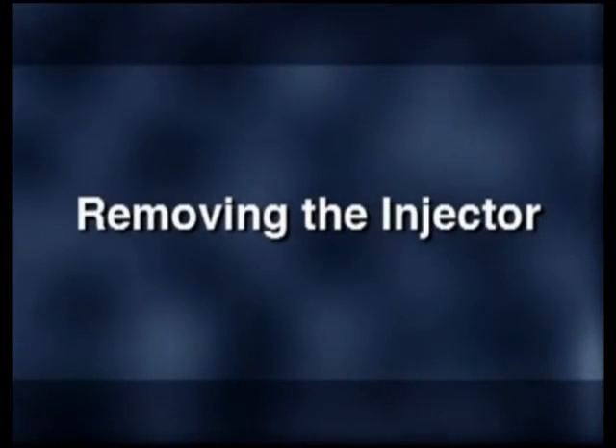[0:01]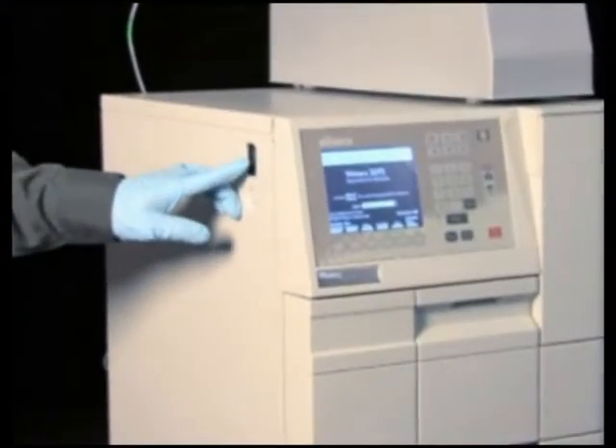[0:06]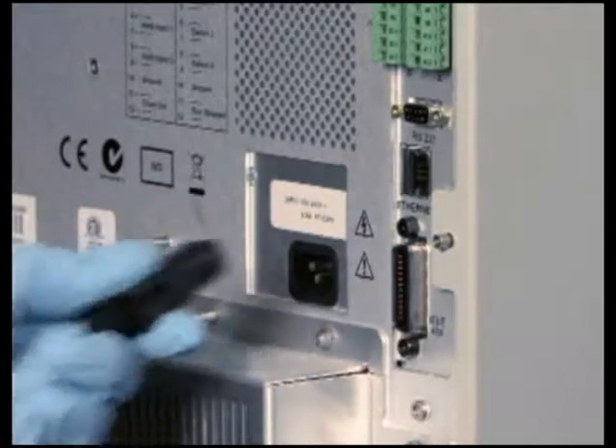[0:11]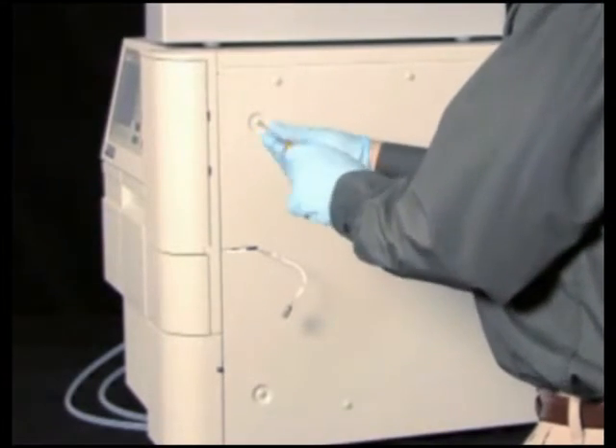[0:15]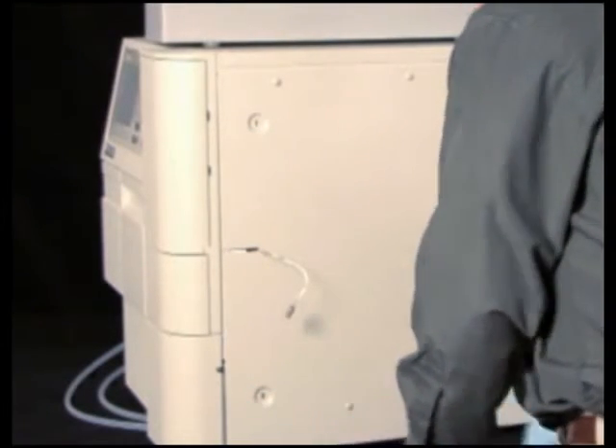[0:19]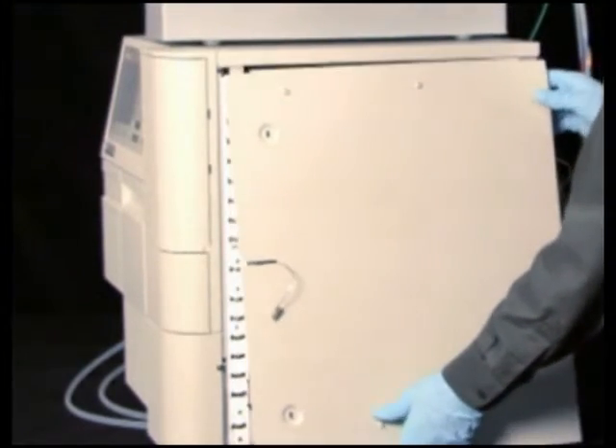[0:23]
Turn the 2695 separations module off and disconnect the power cord. If present, remove the optional column heater or column heater cooler by lifting it from its keyed ports, and then disconnecting its cable from the rear of the separations module. Remove the right side panel.
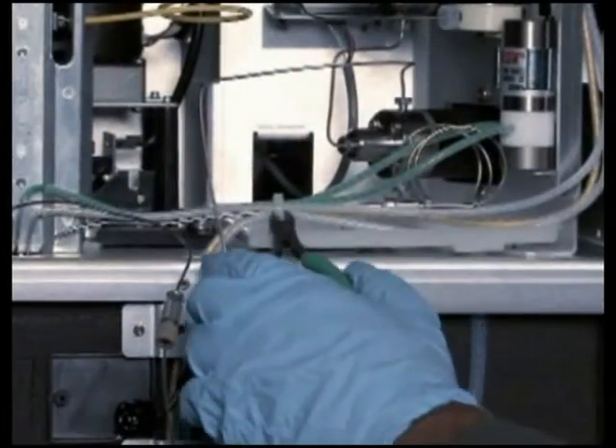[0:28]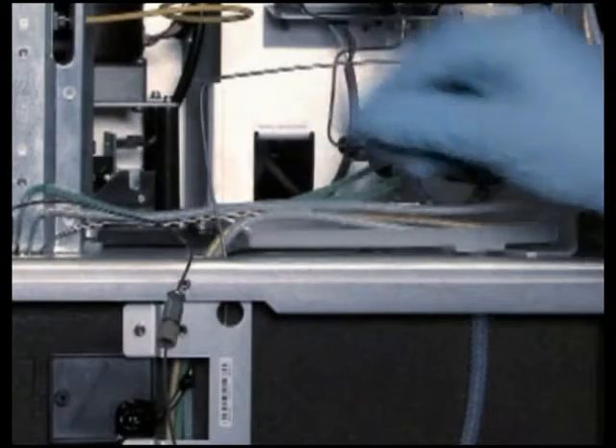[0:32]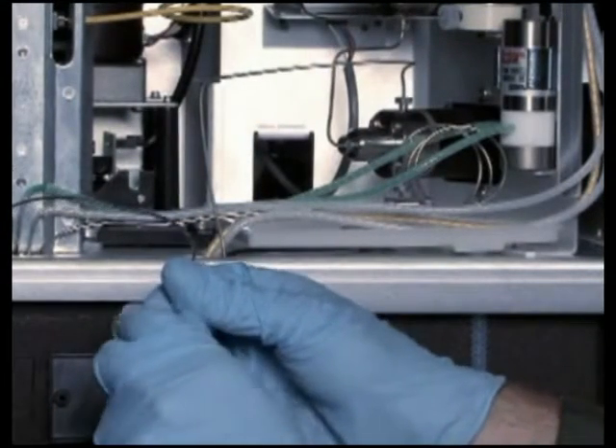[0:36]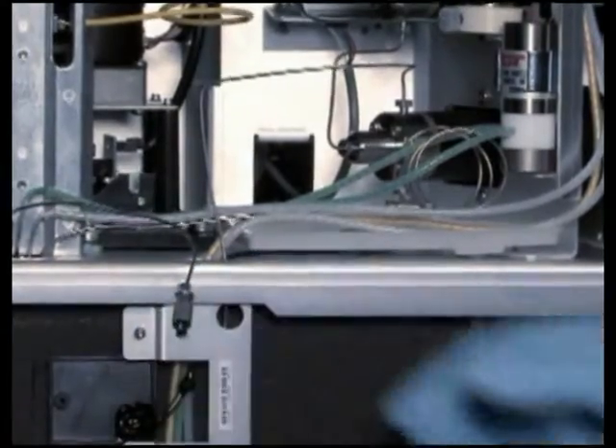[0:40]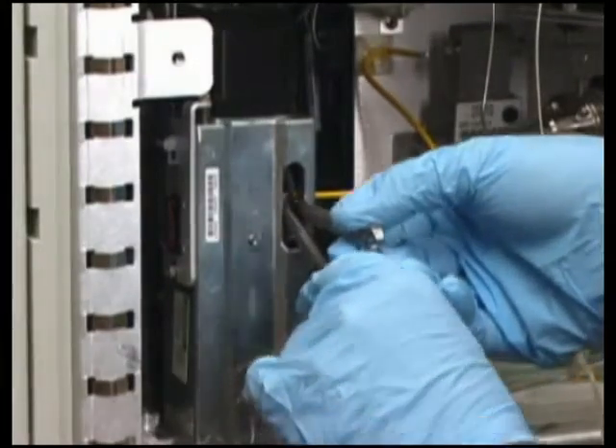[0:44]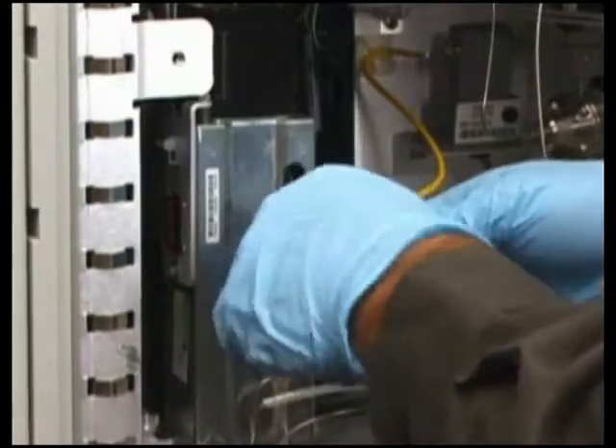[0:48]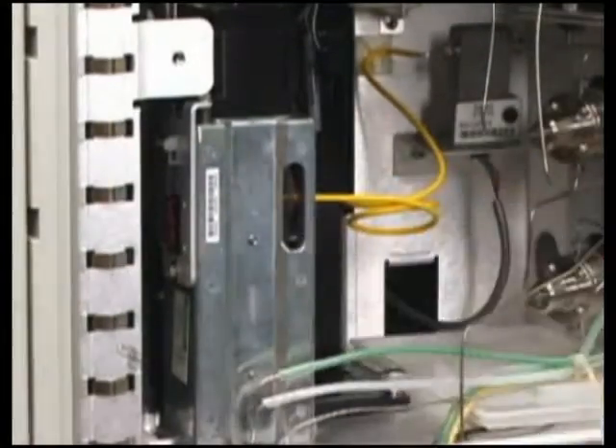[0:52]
Next, cut and remove the tie wraps securing the needle wash lines and restrictor loop. Disconnect the column fluid line between the injector assembly and the column. Using two 5/16 inch open-end wrenches, position one on the compression fitting of the sample loop and the other on the needle T. Loosen and remove the sample loop from the T.
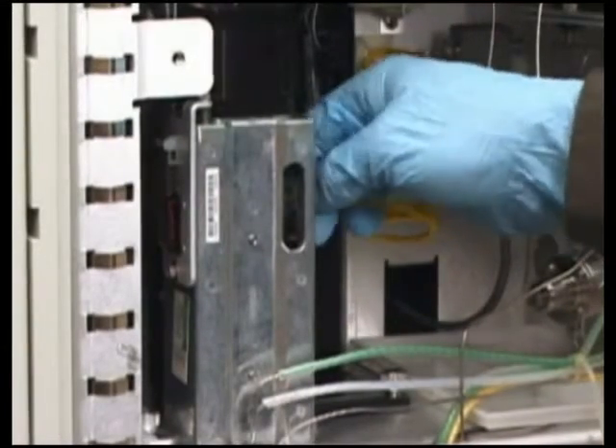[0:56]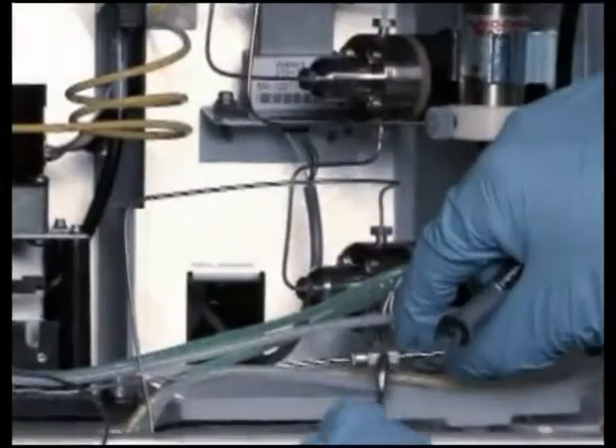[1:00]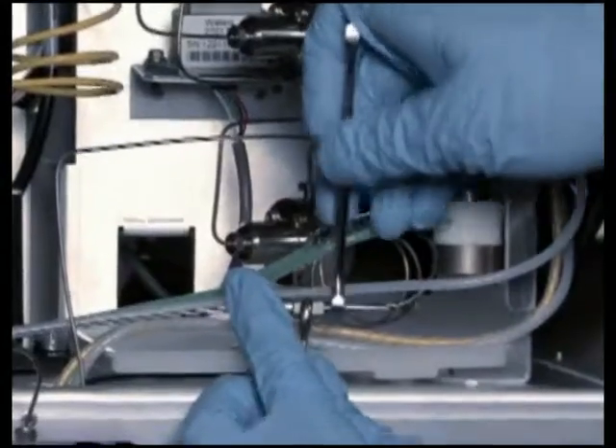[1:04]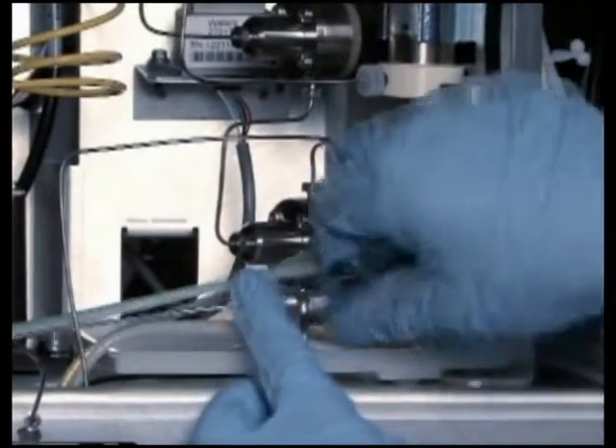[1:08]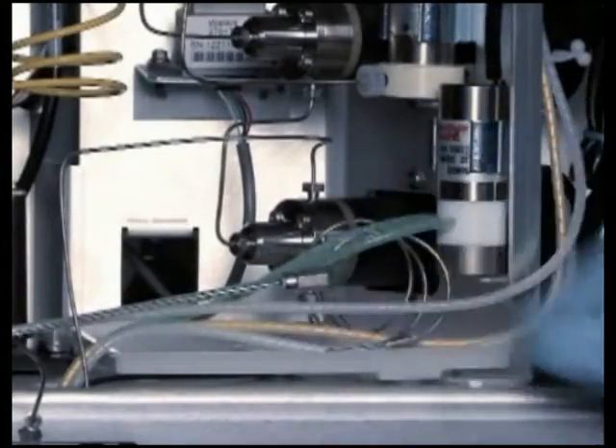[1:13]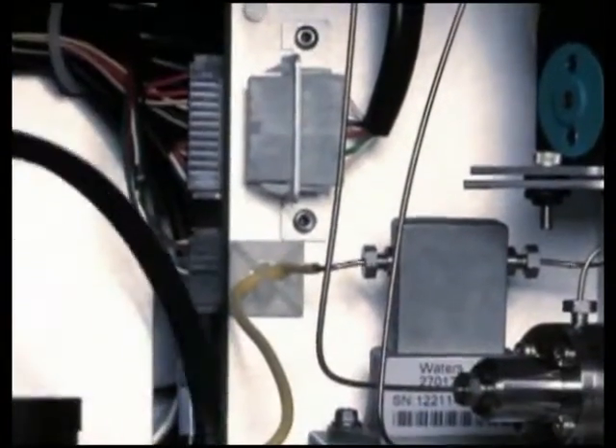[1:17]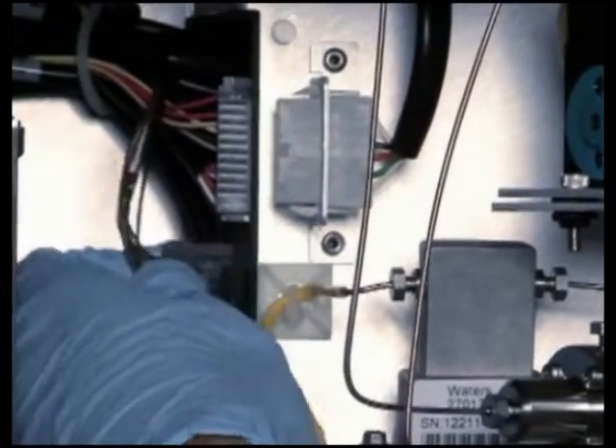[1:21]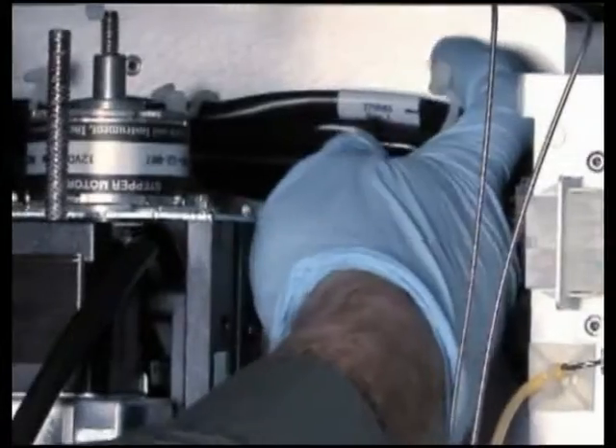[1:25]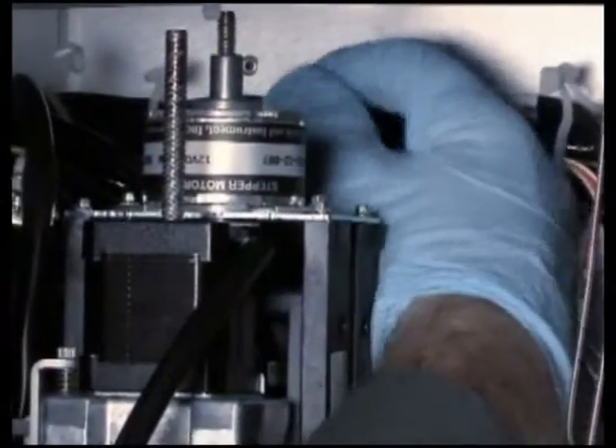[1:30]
Using two 5/16 inch open-end wrenches, remove the restrictor loop that's attached to the shorter of the two stainless steel tubes exiting the bottom of the injector. Disconnect the injector motor cable from the interconnect on the chassis-mounted bracket. Disconnect the optical switch cable from the driver circuit board. Then, untie the four reusable tie wraps to free the optical switch.
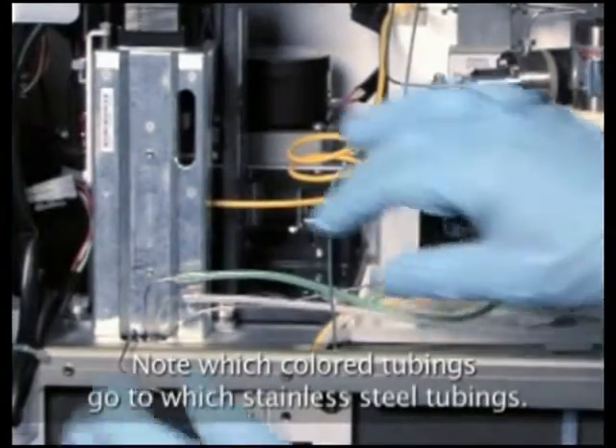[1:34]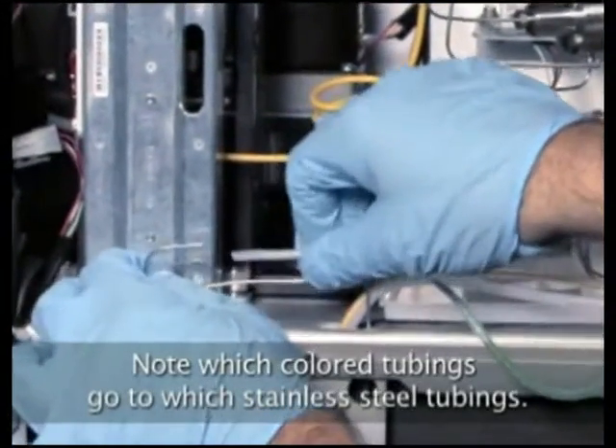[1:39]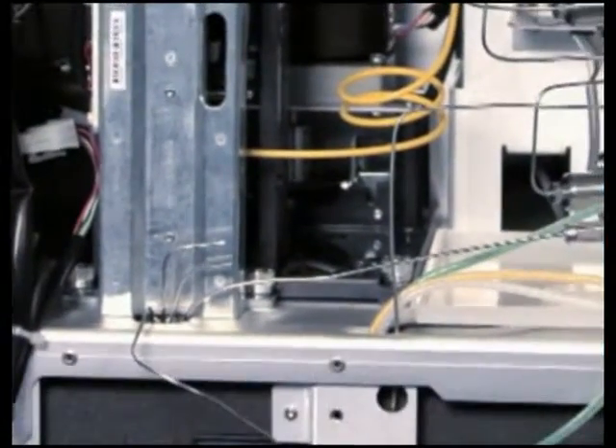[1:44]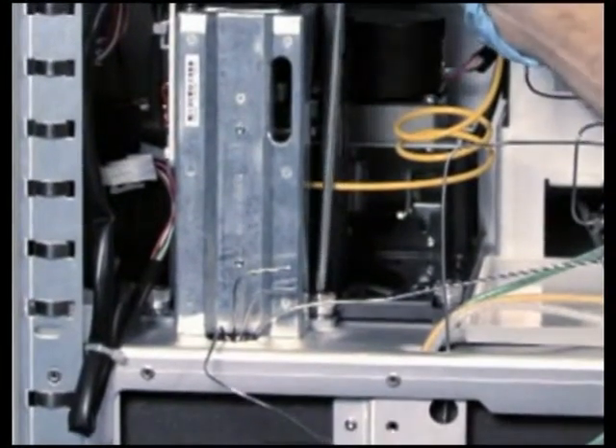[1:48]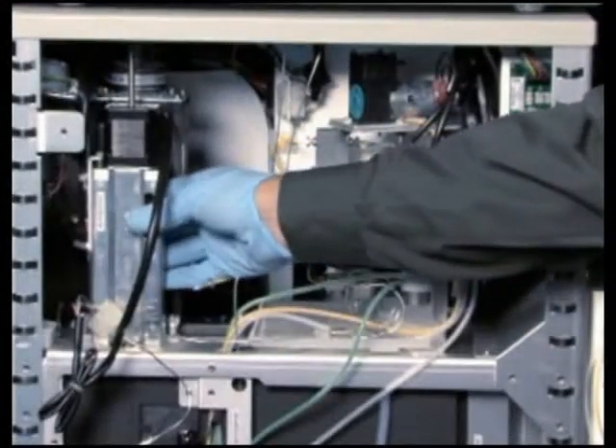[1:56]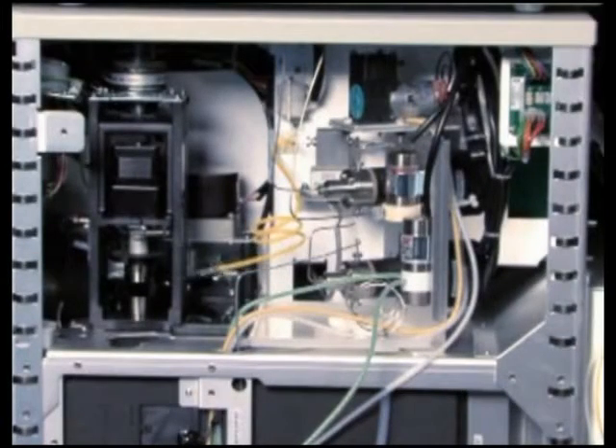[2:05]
Remove the green needle wash inlet line and the yellow or clear needle wash outlet line from the stainless steel connecting lines at the bottom of the injector. Loosen the two captive mounting screws that secure the injector to the chassis. Lift the injector assembly a few inches and then carefully remove it and its cable from the instrument. Carefully lay the injector on a clean surface on its side.
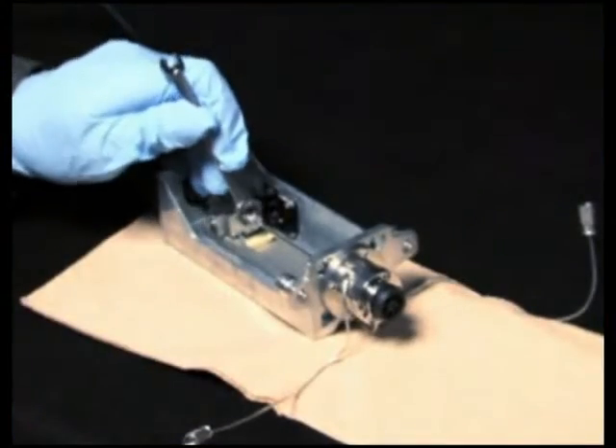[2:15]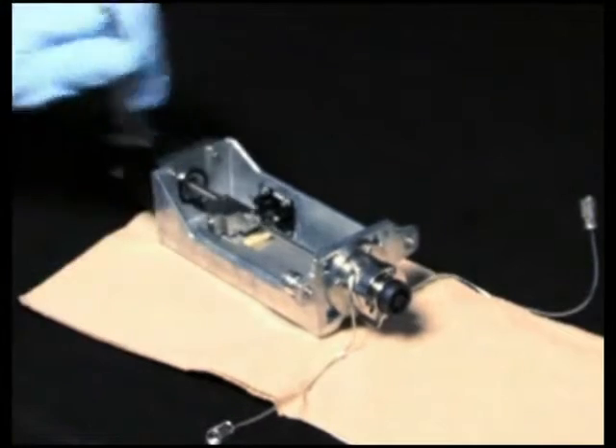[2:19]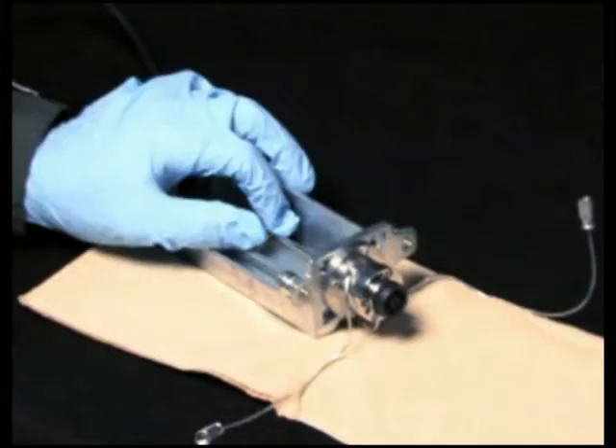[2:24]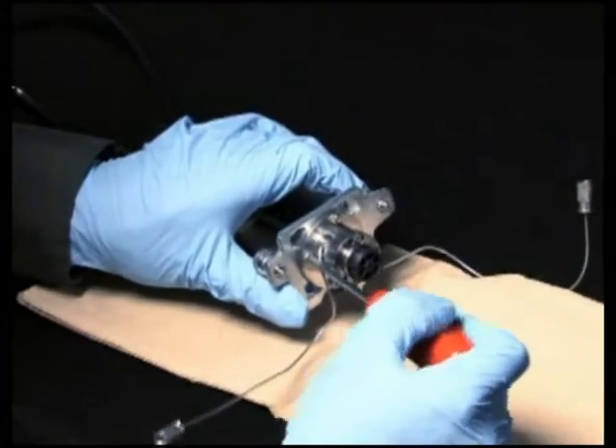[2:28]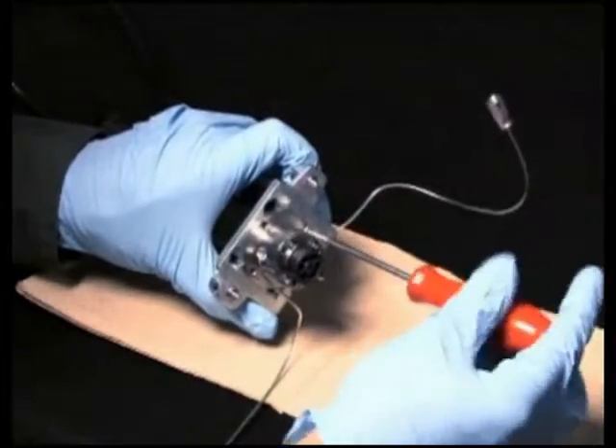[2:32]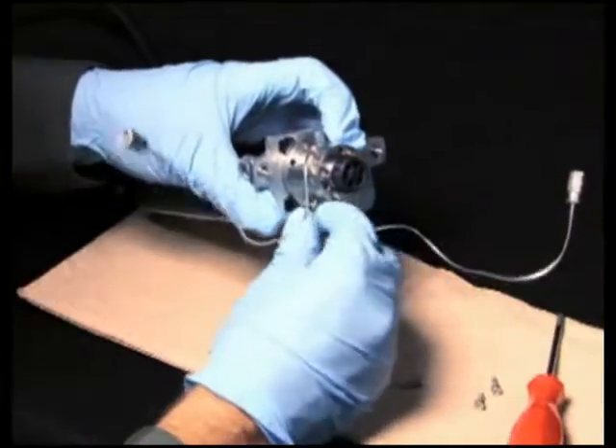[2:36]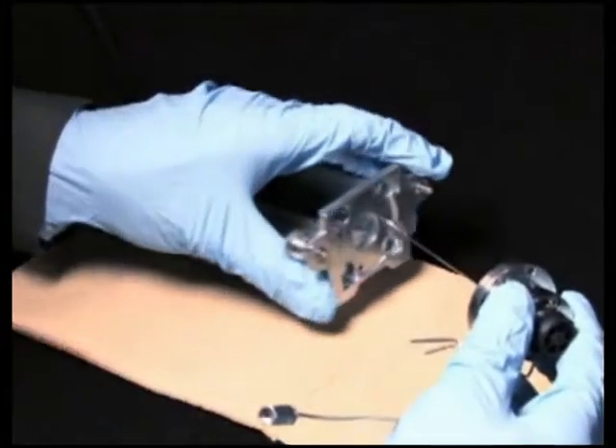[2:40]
Using two 5/16 open-end wrenches, disconnect the injector needle from the needle T. Loosen and remove the four M3 screws that secure the seal pack to the base of the injector. Finally, remove the seal pack with needle and place it on a clean surface.
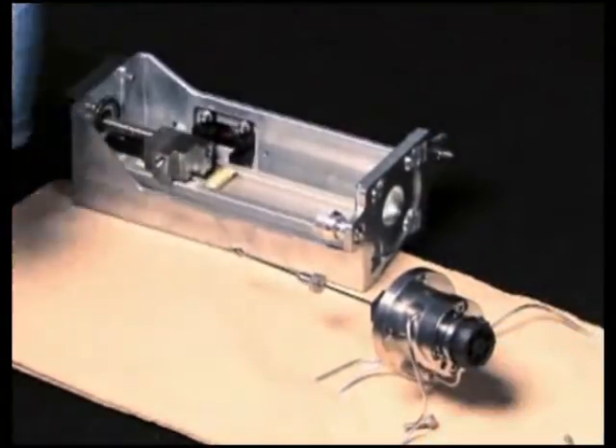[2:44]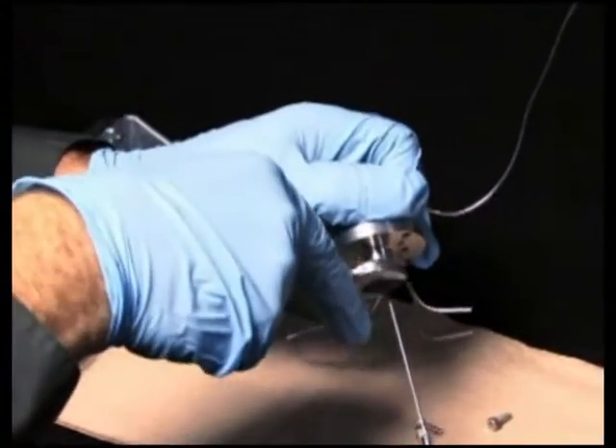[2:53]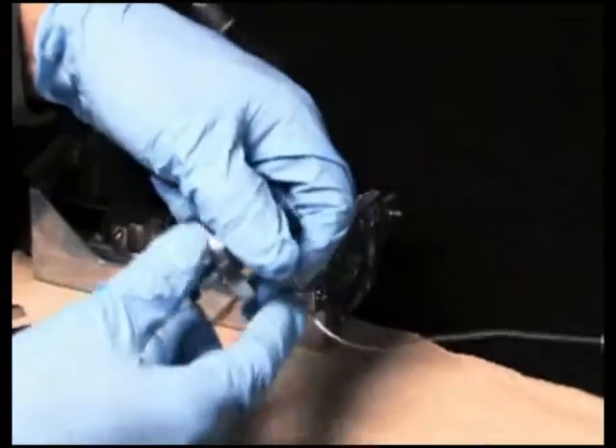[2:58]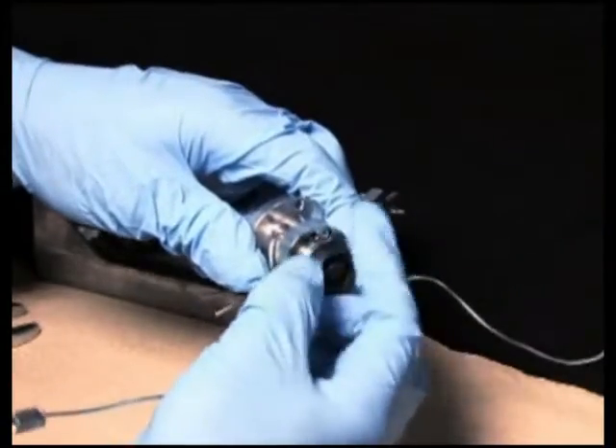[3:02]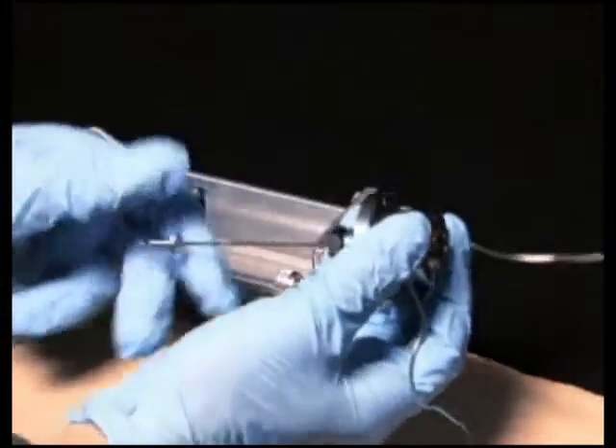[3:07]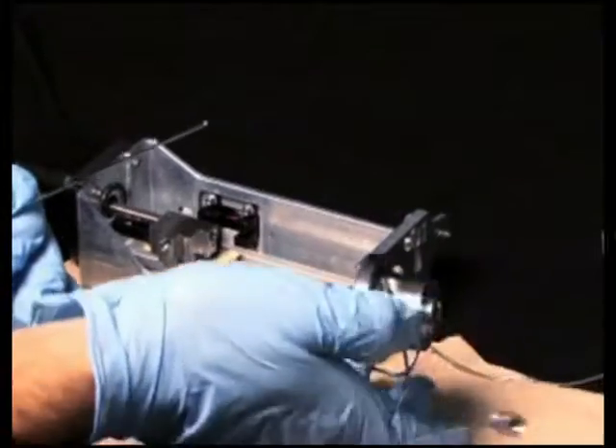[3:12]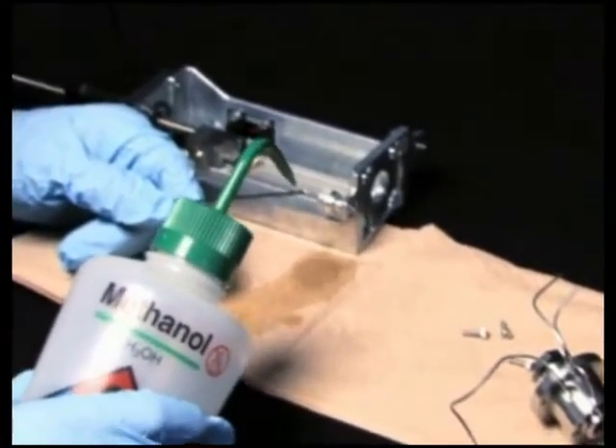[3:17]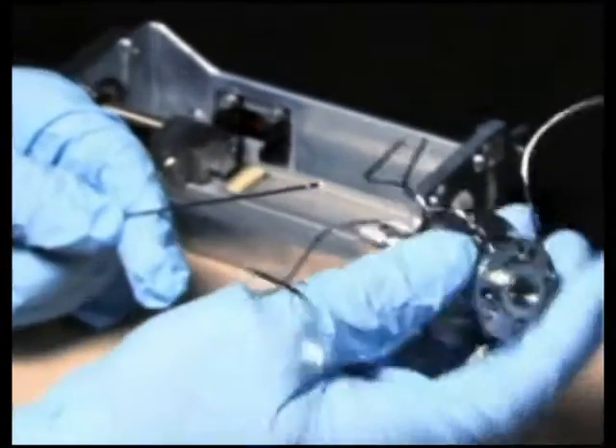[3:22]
To remove the needle, loosen the seal pack's upper and lower frit retainers. The upper frit retainer requires a 5/16 inch open-end wrench. Grasp the upper end of the needle and carefully withdraw the needle from the seal pack. Lubricate the tip of the new injector needle with 100% alcohol. Next, orient the needle port about 1/8 inch to the left of the scallop located on the underside of the seal pack.
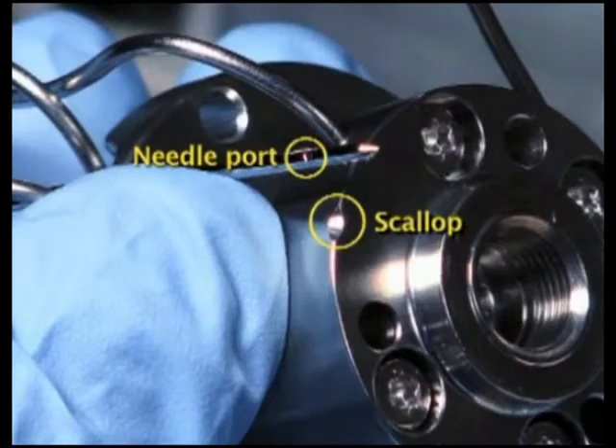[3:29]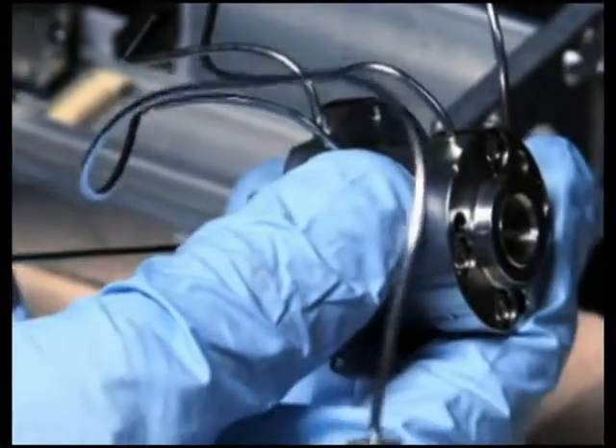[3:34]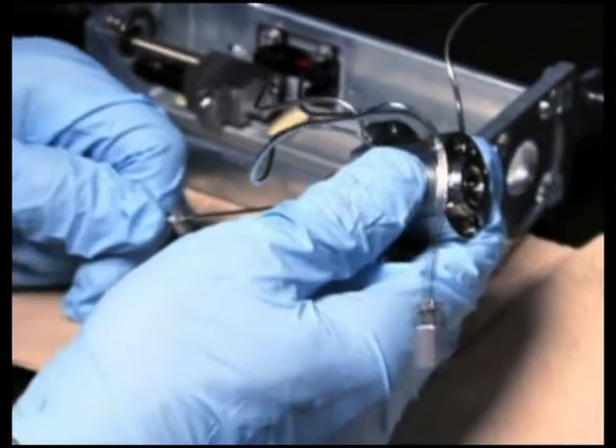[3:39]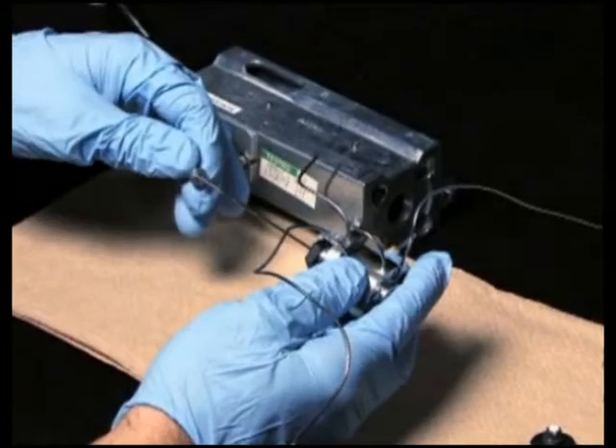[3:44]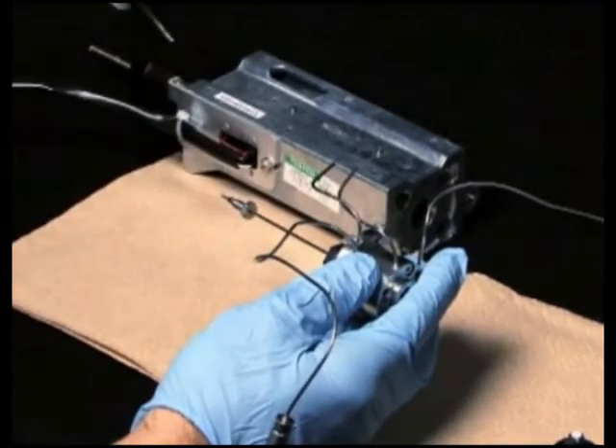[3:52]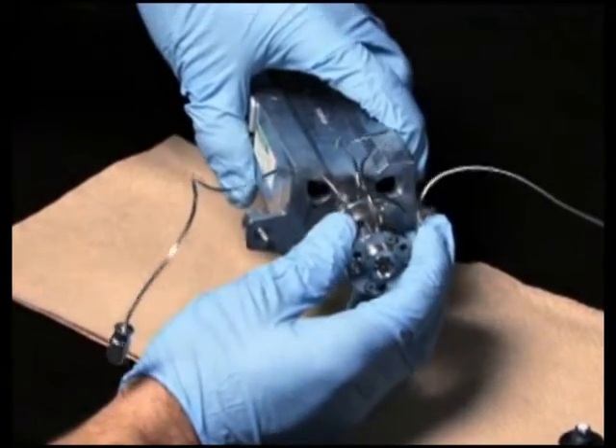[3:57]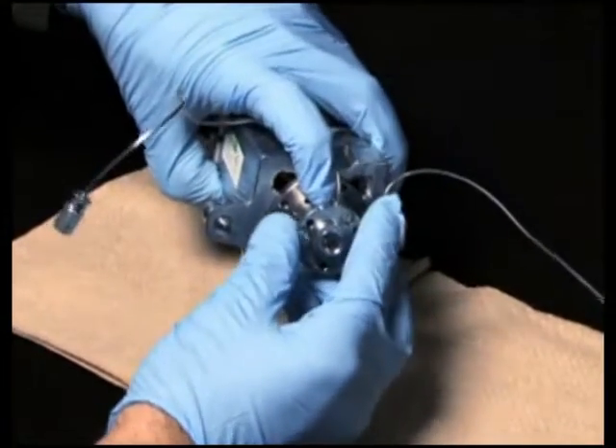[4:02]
Then, carefully slide the seal pack onto the needle. The needle should align with the scallop when the compression screw is tightened. Place the needle compression screw and ferrule onto the upper end of the needle. Next, position the seal pack with needle so that the stainless steel needle wash lines face the channel in the back of the injector. Align the four holes in the seal pack and injector base, and insert the seal pack with needle into the injector base.
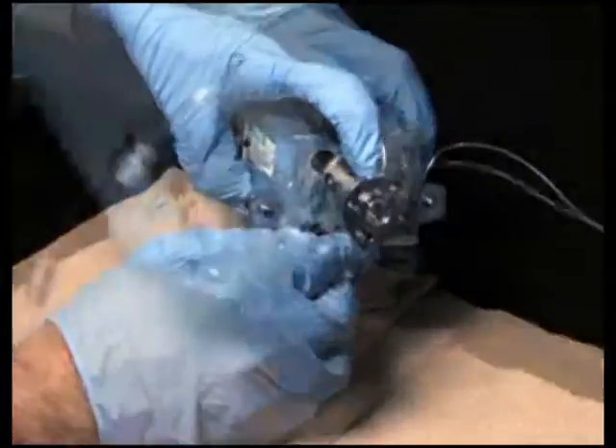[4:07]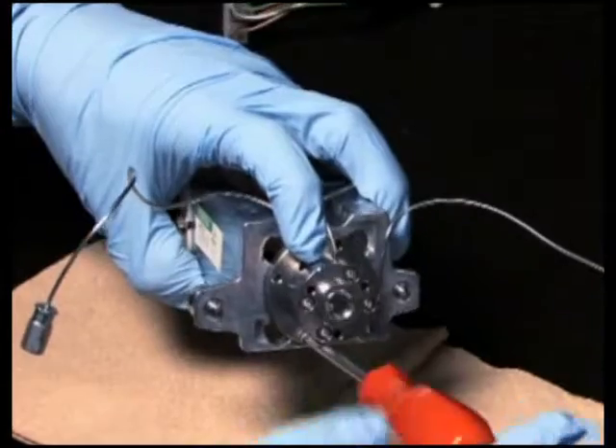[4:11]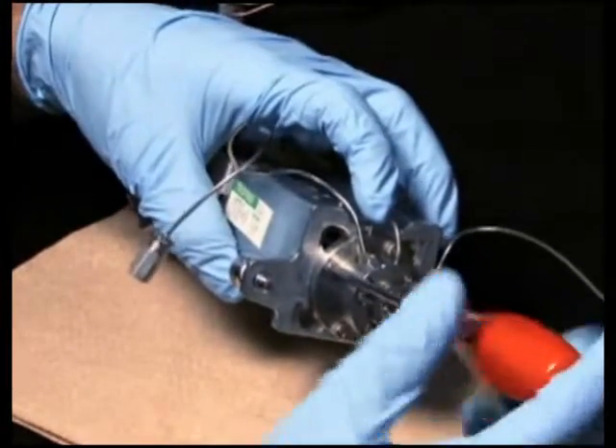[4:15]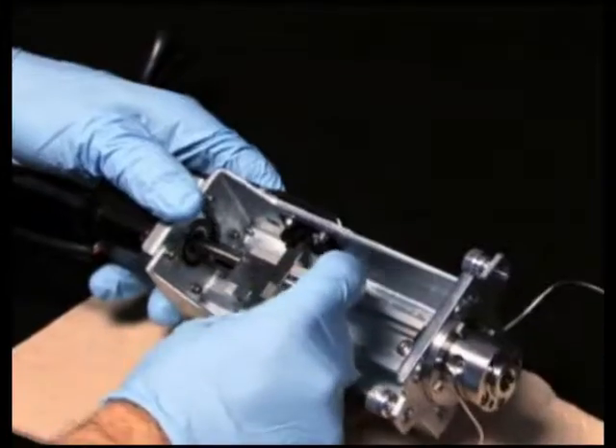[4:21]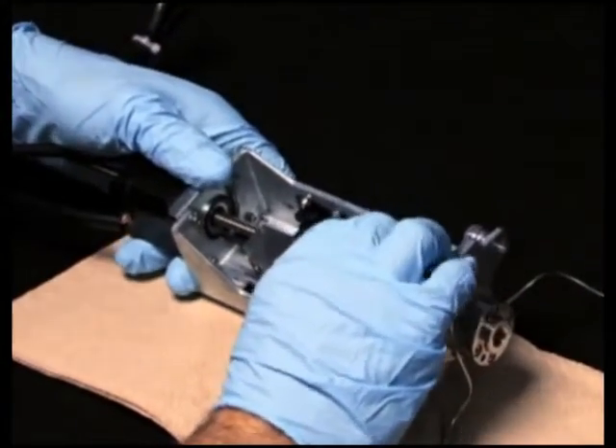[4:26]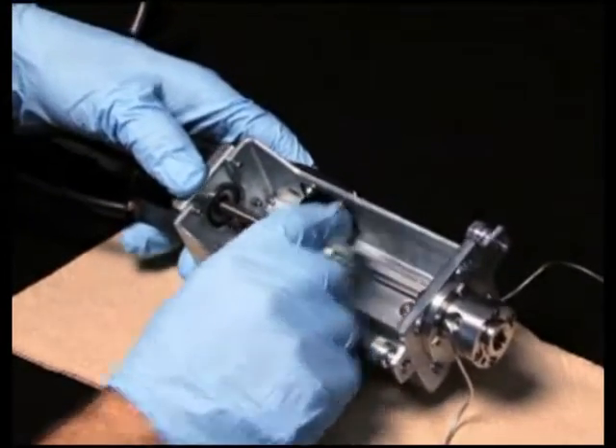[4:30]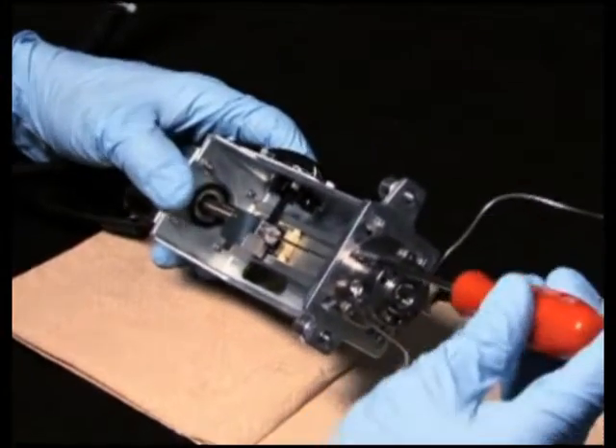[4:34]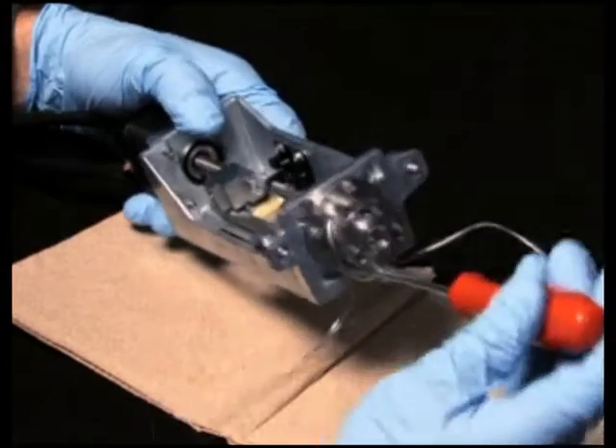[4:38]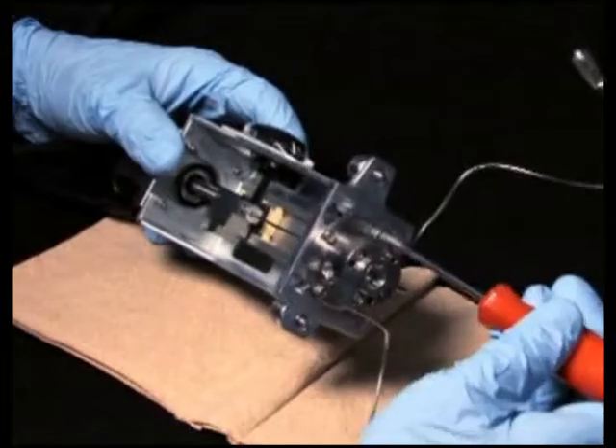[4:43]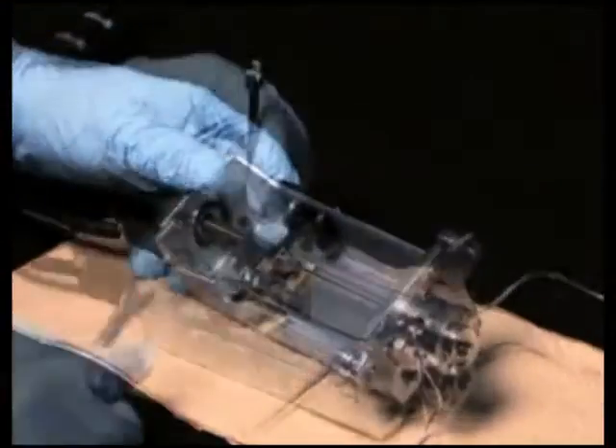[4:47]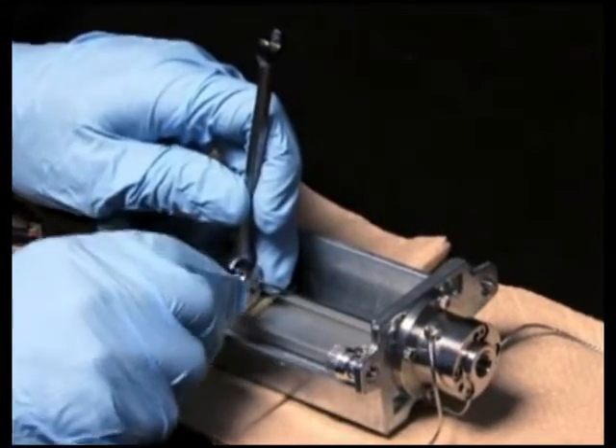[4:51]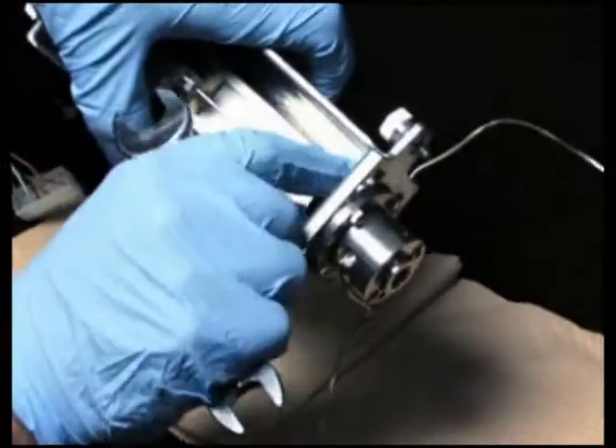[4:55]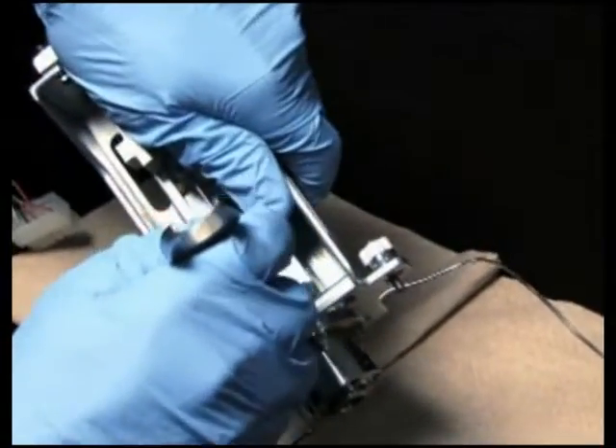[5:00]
Reinstall the four screws that secure the seal pack to the injector base plate. Do not tighten. Continue to guide the needle and ferrule into the needle T until it seats. Then, hand tighten the compression screw. Now, tighten the four T10 Torx screws that secure the seal pack to the injector base. Use the 5/16 inch open-end wrench to tighten the needle compression screw. Finally, reinstall and tighten the upper and lower needle wash frit retainers.
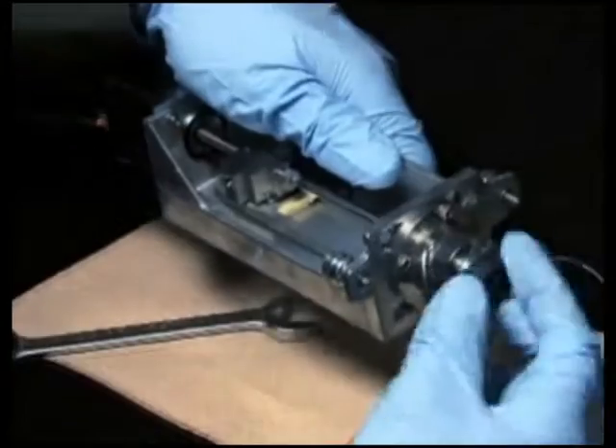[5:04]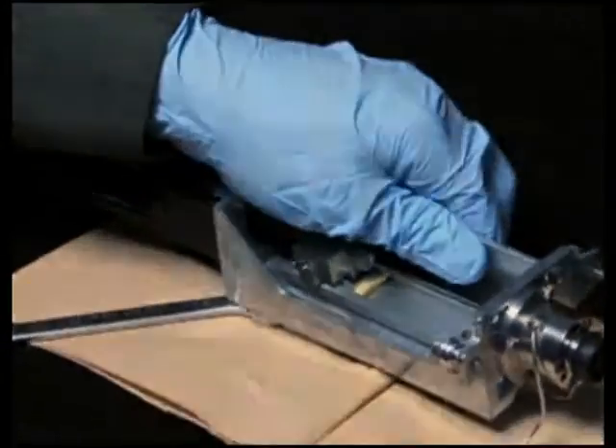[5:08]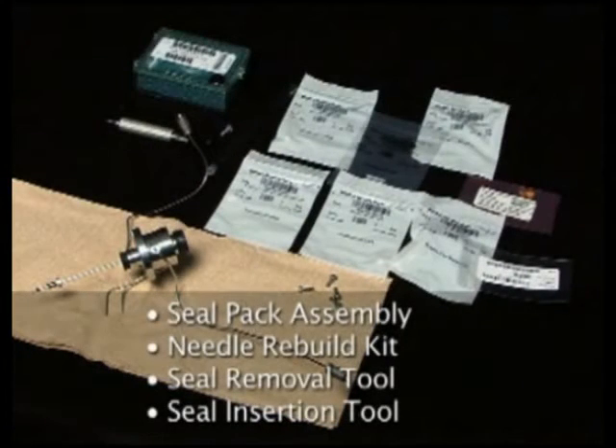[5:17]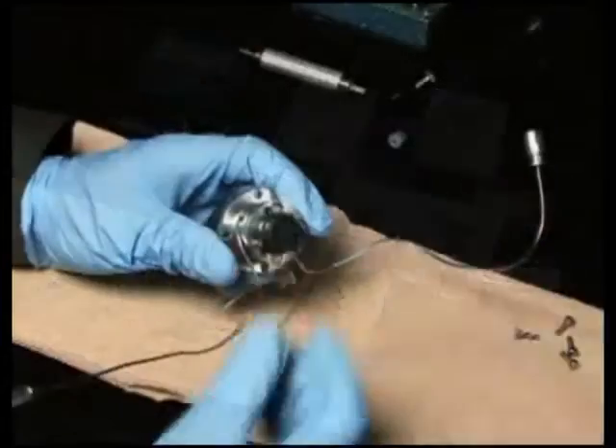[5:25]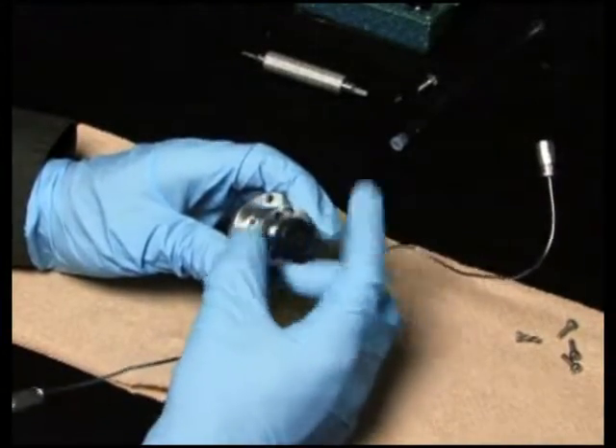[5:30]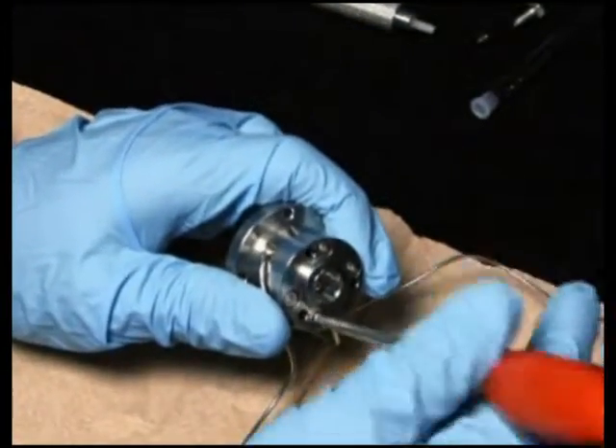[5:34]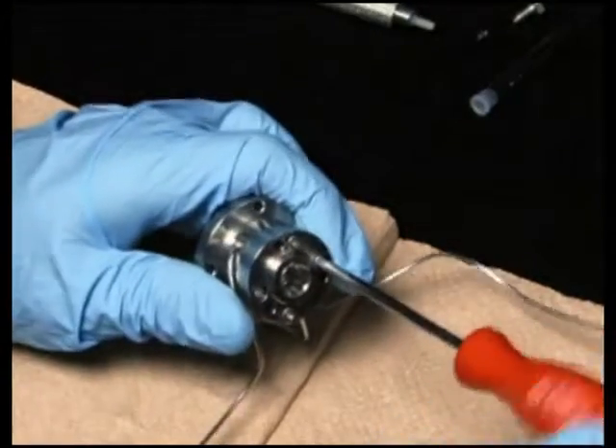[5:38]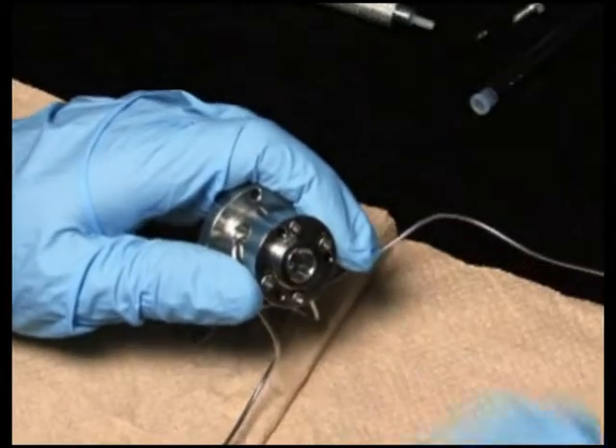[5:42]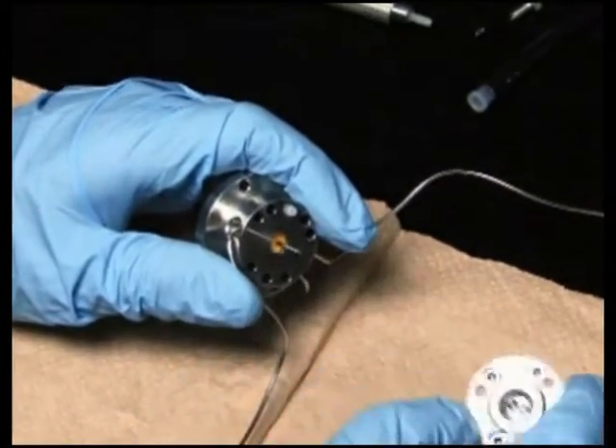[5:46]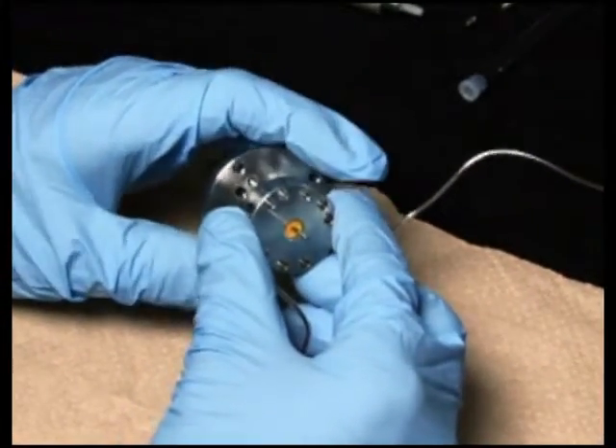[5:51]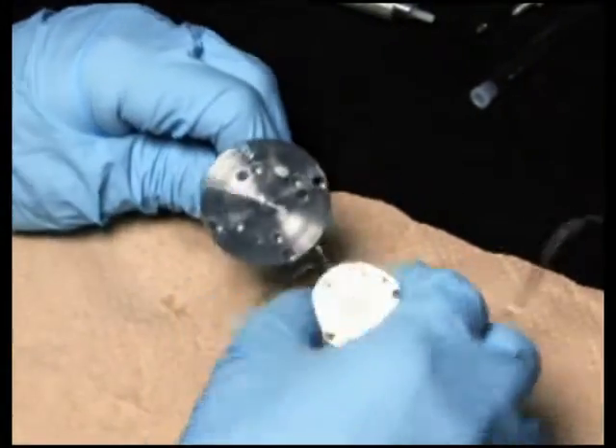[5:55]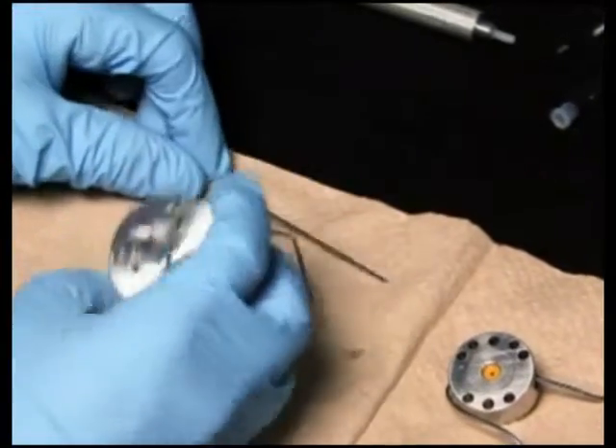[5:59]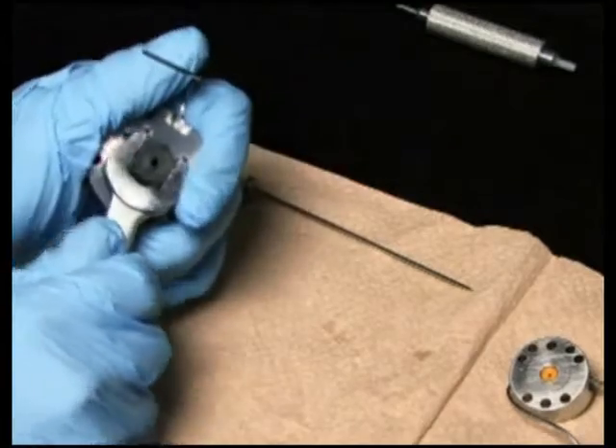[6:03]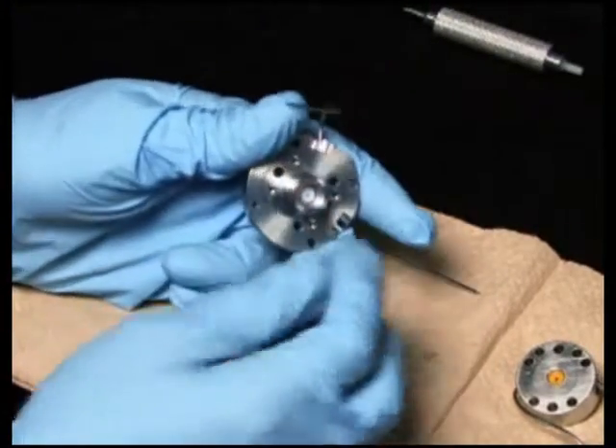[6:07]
To rebuild the seal pack, you will need the seal pack rebuild kit with needle, seal removal tool, and seal insertion tool. Remove the frit retainer from the lower wash body. Separate the upper seal wash body, the seal body, and the lower seal wash body. Using a 9/16 inch open-end wrench, remove the frit retainer from the upper seal wash body and remove the Teflon washer.
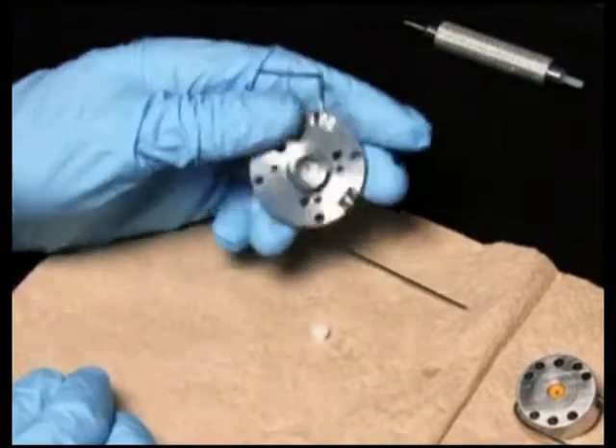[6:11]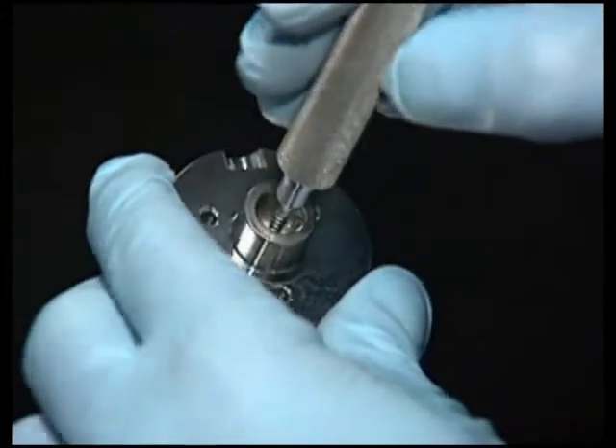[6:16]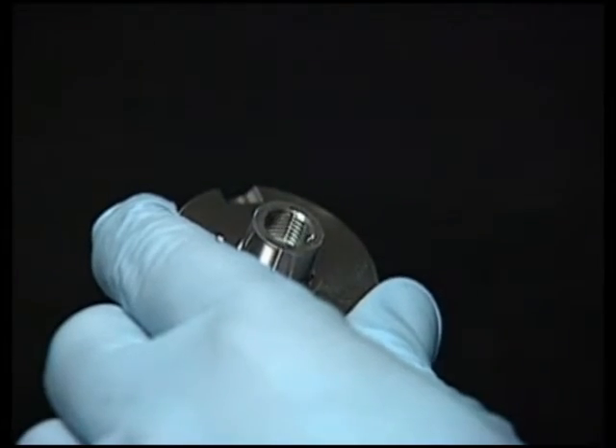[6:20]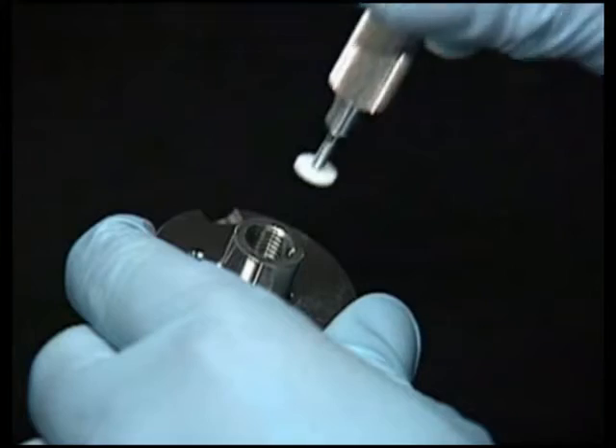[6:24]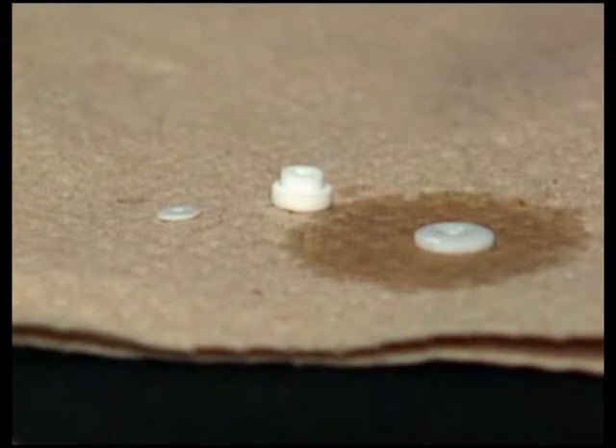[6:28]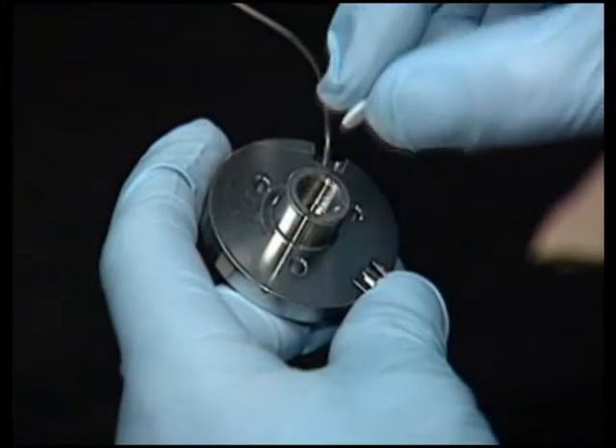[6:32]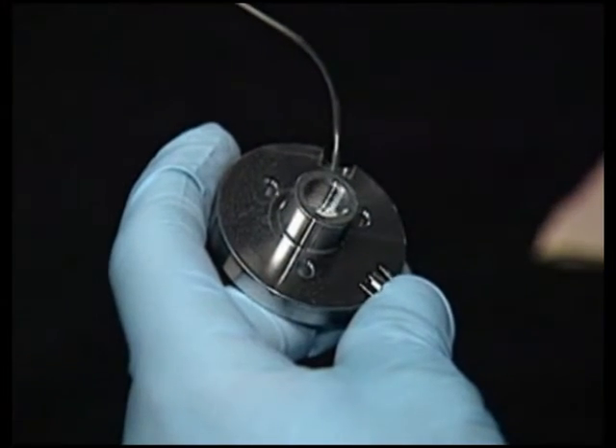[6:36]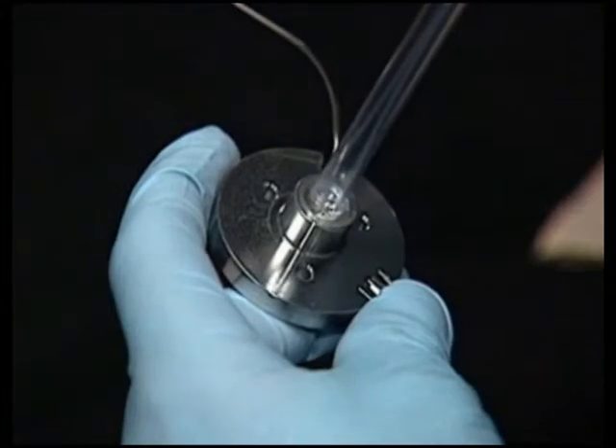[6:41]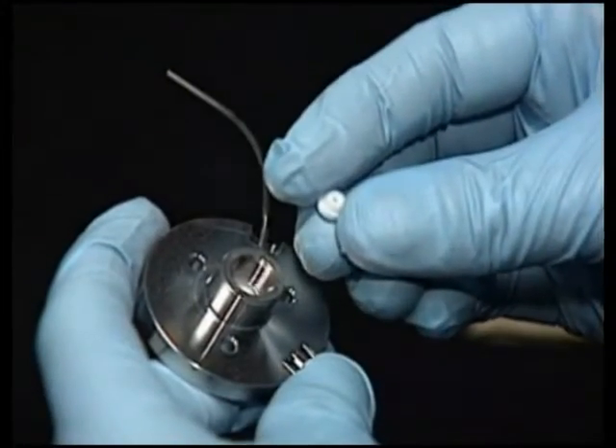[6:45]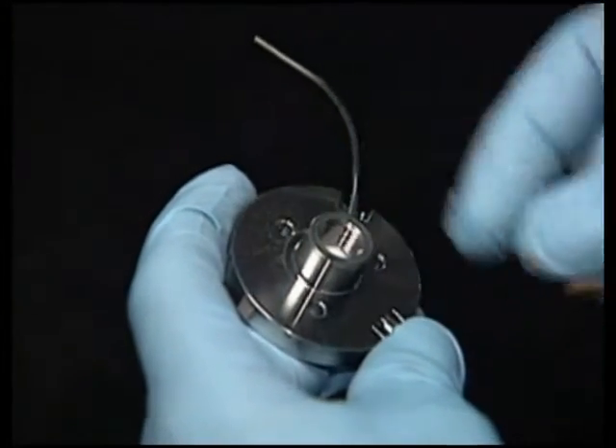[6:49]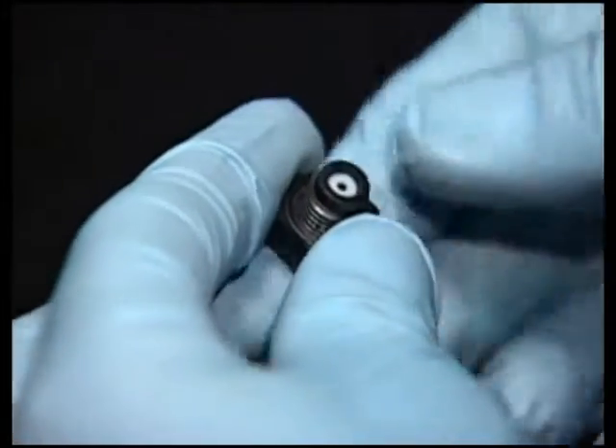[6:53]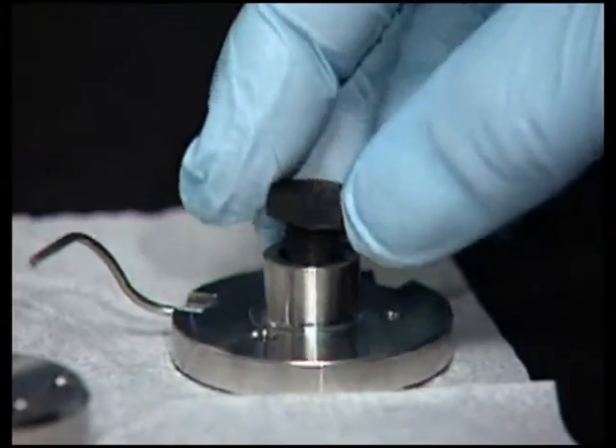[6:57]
Next, using the seal removal tool, remove the needle wash filter from the upper seal wash body and the upper spacer from the upper seal wash body. Wet a new upper spacer, needle wash filter, and Teflon washer with methanol. Press the upper spacer into the upper seal wash body. Use a flat-ended object, such as the capped end of a plastic pen, to ensure the spacer is firmly seated. Insert a new needle wash filter into the upper seal wash body with a tapered end facing out. Insert a Teflon washer into the frit retainer and then screw the retainer into the upper seal wash body. Tighten using the 9/16 inch wrench.
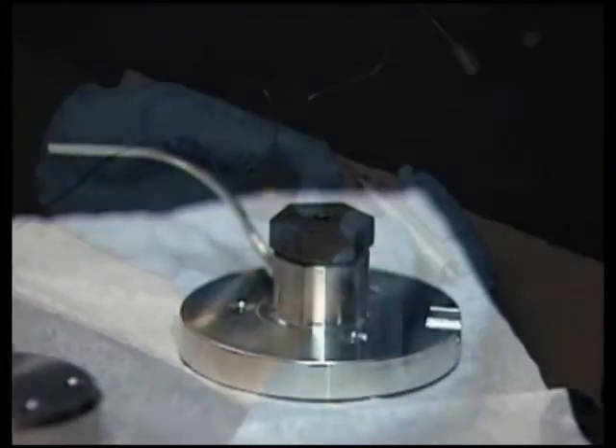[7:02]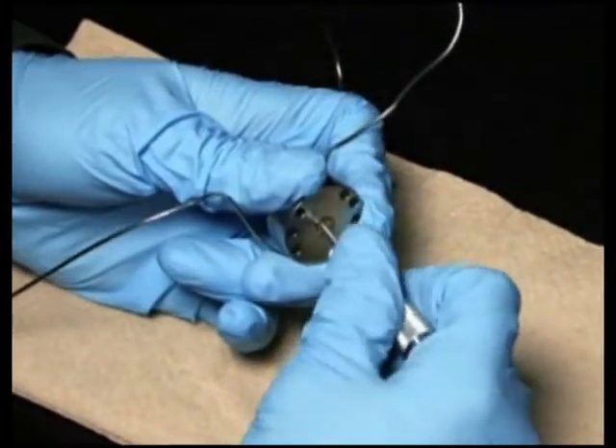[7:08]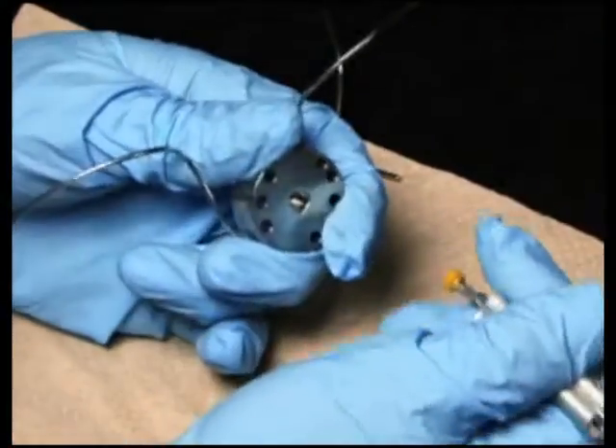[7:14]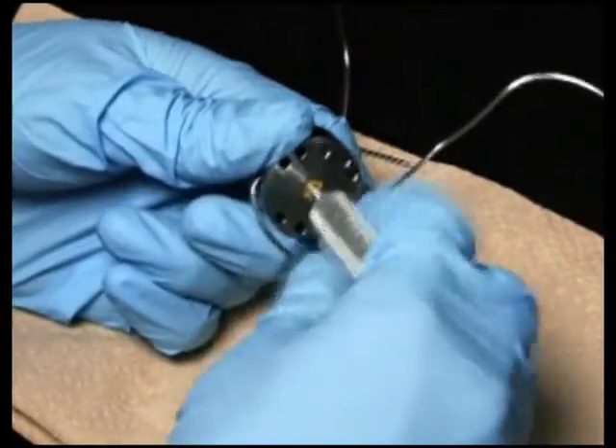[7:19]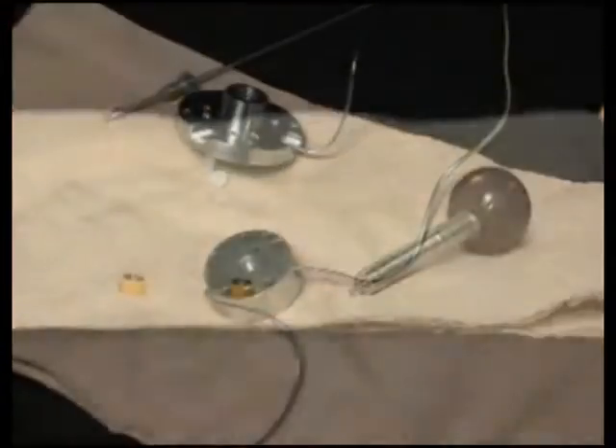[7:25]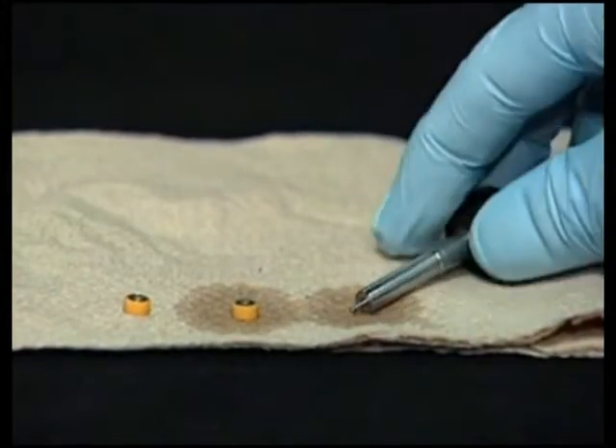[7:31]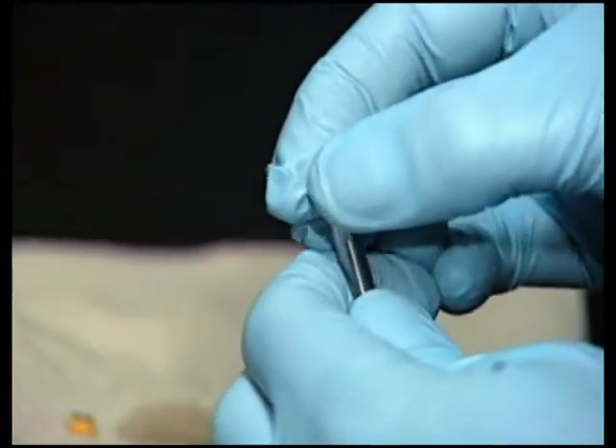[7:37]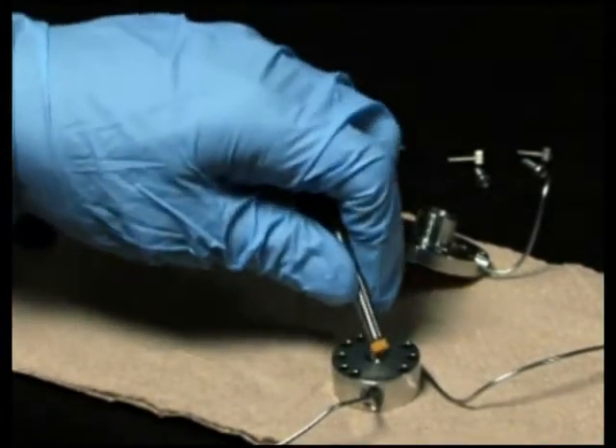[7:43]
To rebuild the seal body, use the seal removal tool to remove the upper and lower seals in the seal body. If you have purchased the seal pack replacement kit, an assembled seal wash body is included, making the rebuilding of the seal body shown here unnecessary. Wet the upper replacement high-pressure seal and the end of the seal insertion tool with 100% methanol. Then place the high-pressure seal with the spring side facing up onto the insertion tool. Wet the seal body and insert the replacement seal into the body.
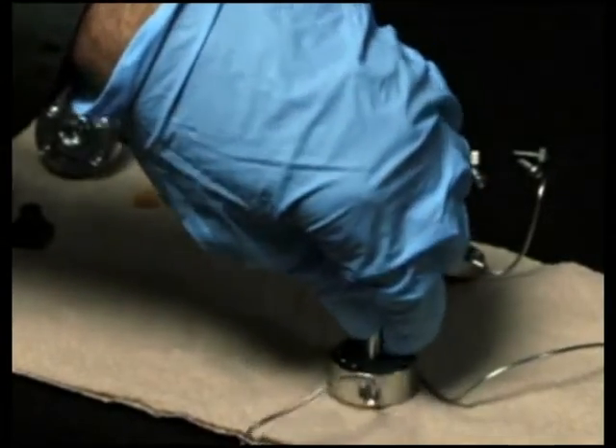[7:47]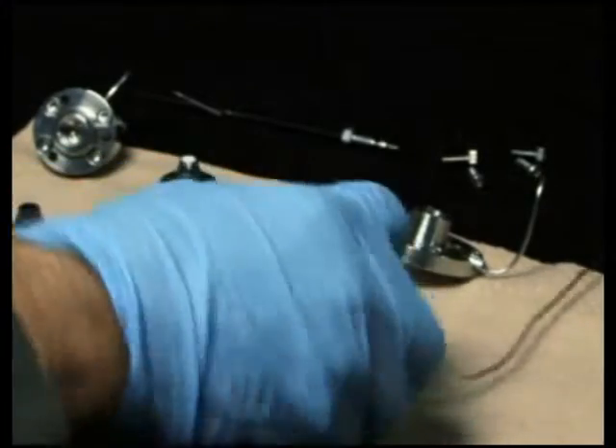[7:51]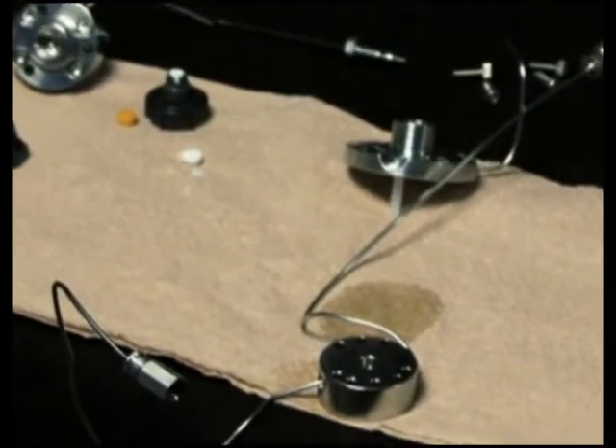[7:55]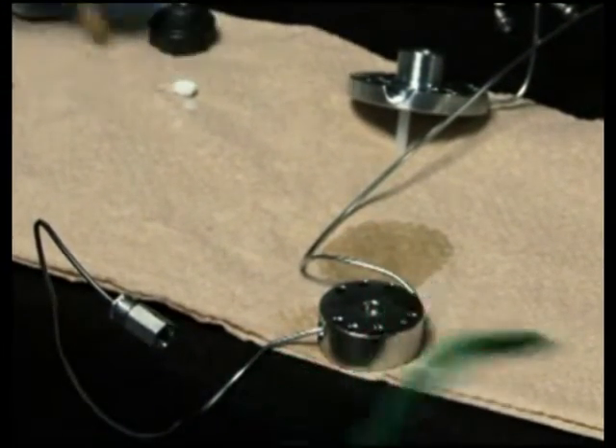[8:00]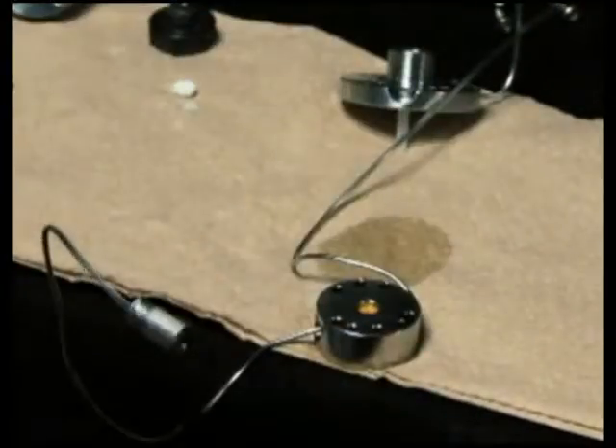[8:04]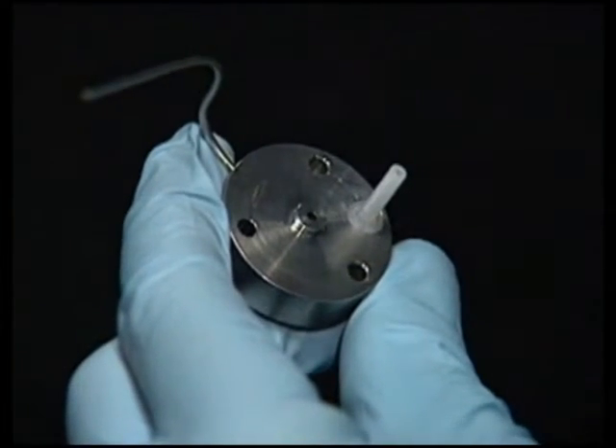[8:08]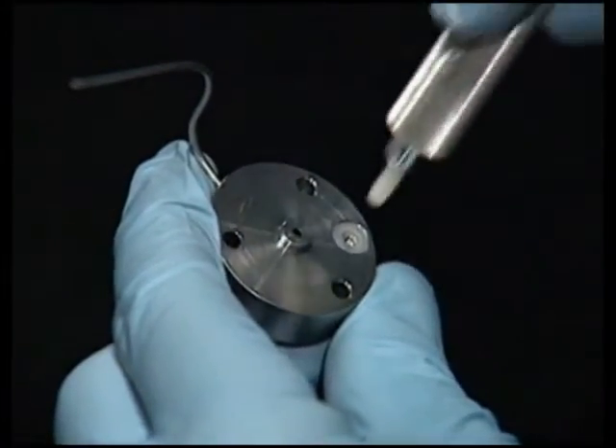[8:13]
Repeat the seal body rebuilding procedure to replace the remaining high-pressure seal found on the other side of the seal body. Next, position the lower seal wash body with filter retainer side facing down and remove the seal wash alignment tube and seal.
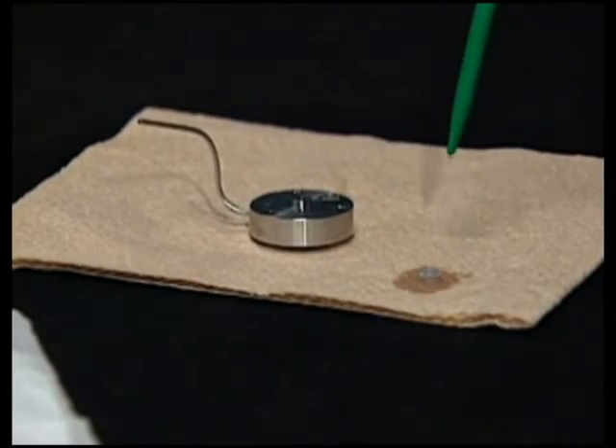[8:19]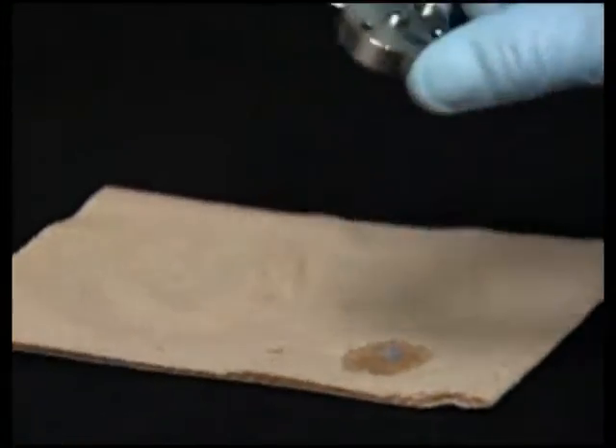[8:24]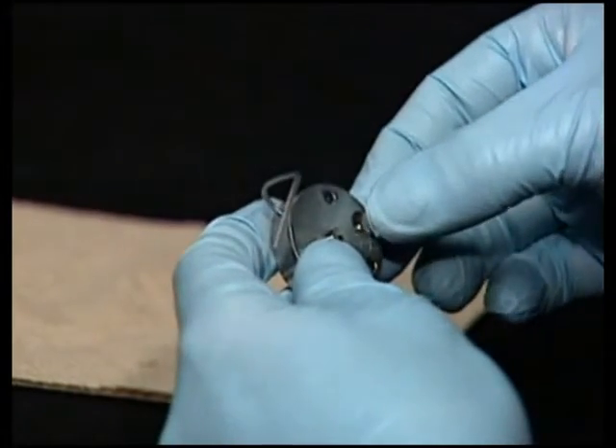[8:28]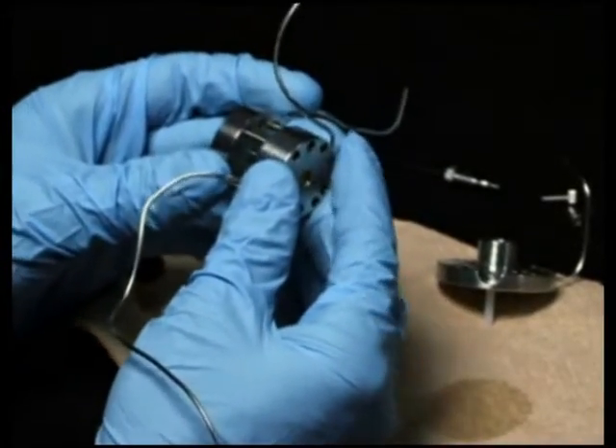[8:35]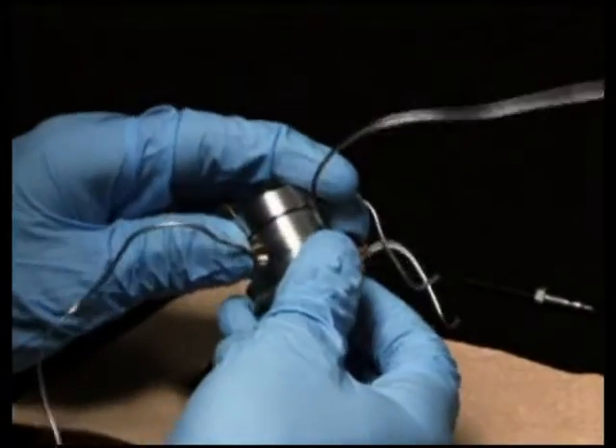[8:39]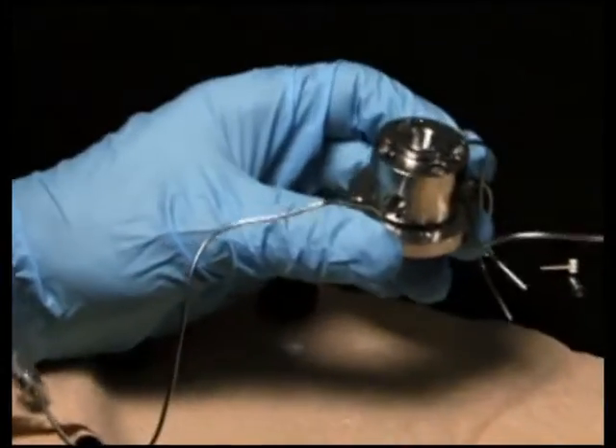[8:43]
Wet a new wash tube seal and the lower seal wash body with methanol. Then insert the new seal and seal alignment tube into the lower seal wash body. Reassemble the lower seal wash body, the seal body, and the upper seal wash body, and secure with the four T10 Torx screws.
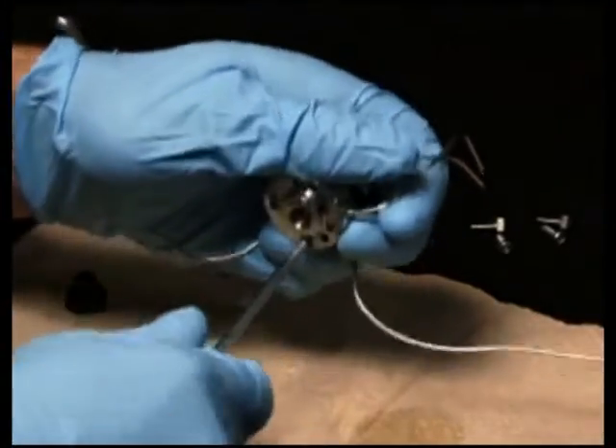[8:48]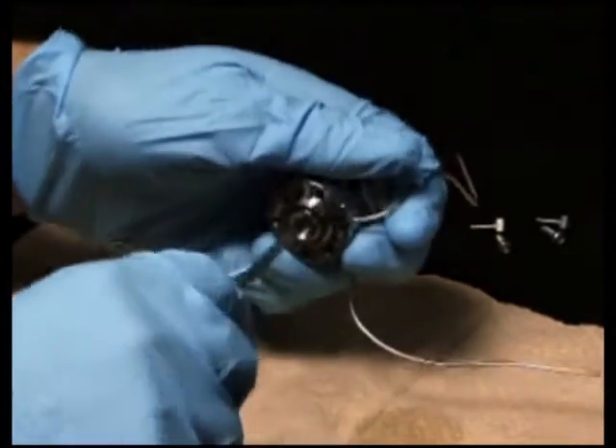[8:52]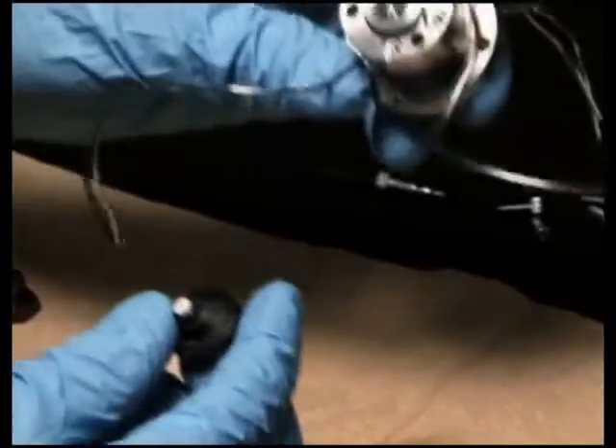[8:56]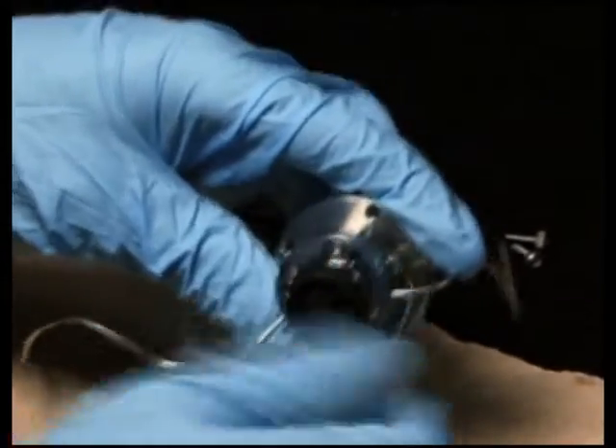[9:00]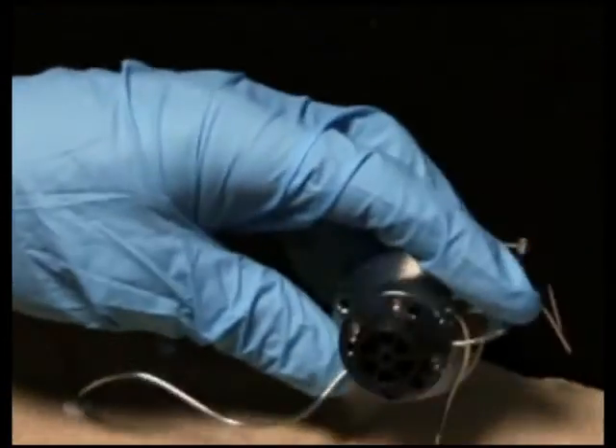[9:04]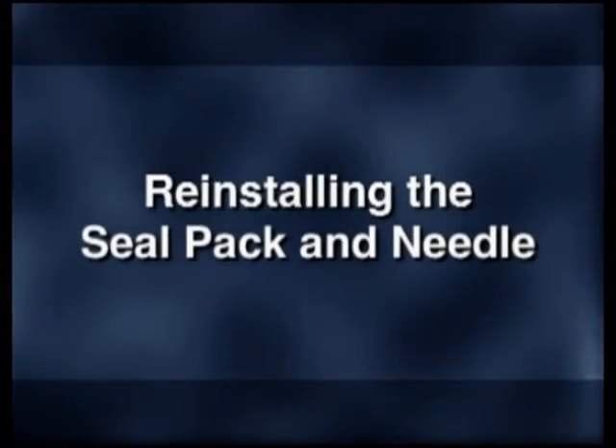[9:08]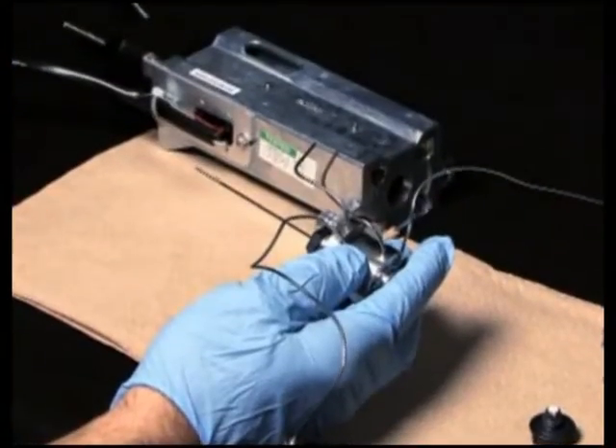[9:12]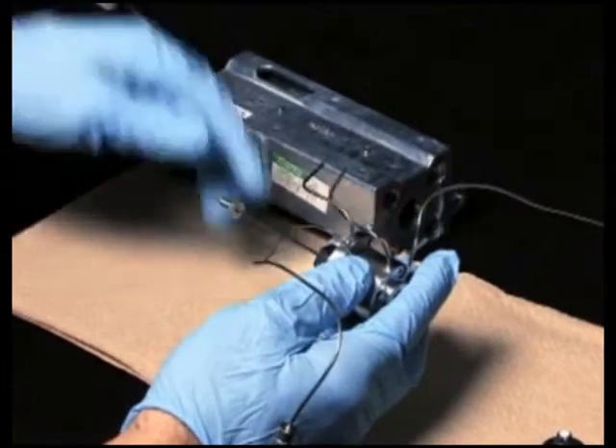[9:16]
Next, place the needle wash filter into the filter retainer. Finally, holding the lower seal wash housing upside down, screw the filter retainer into the housing, finger tight only. Place the needle compression screw and ferrule onto the upper end of the needle.
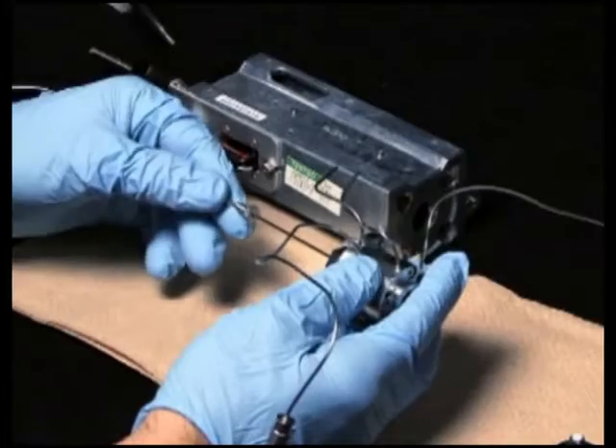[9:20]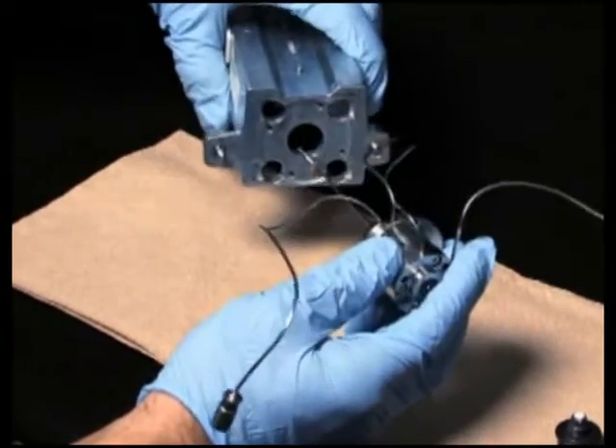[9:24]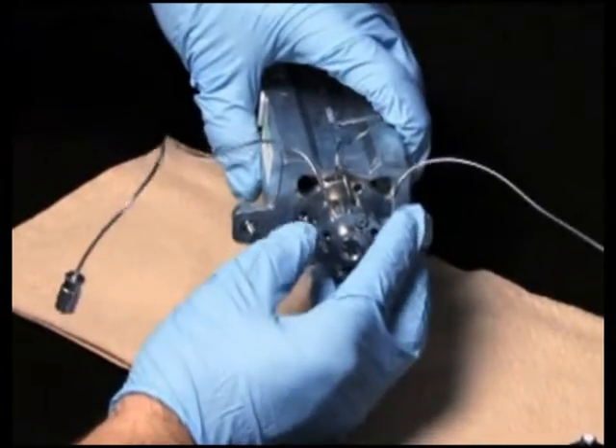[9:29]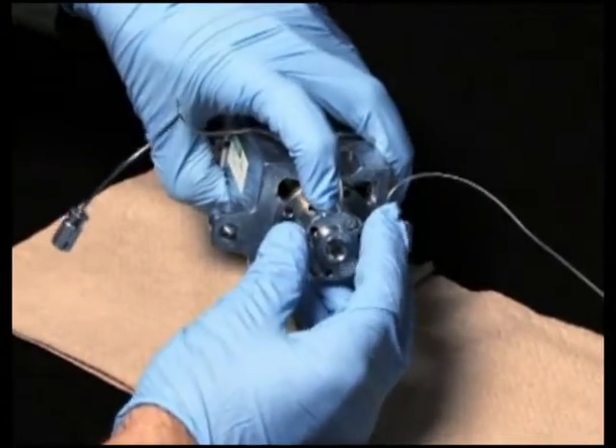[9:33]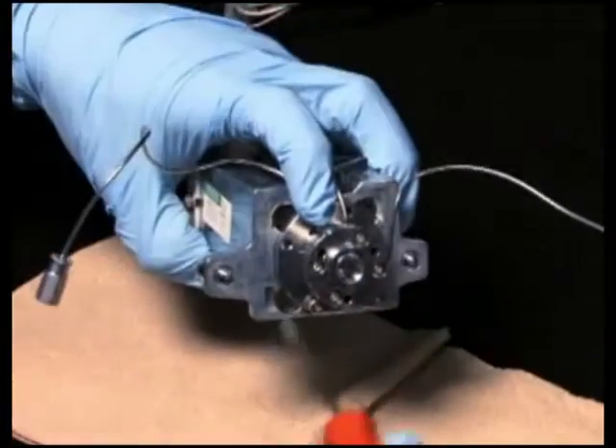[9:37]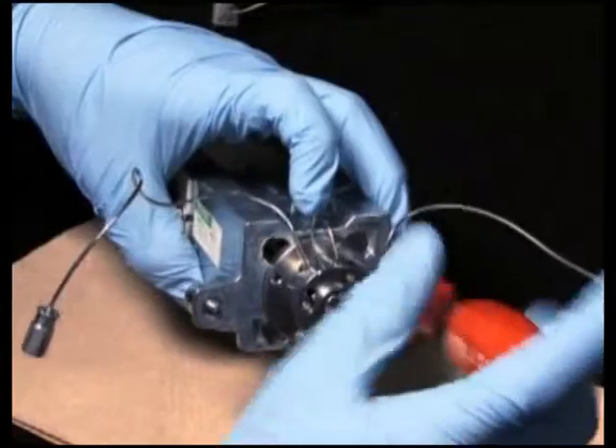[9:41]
Next, position the seal pack with needle so that the stainless steel needle wash lines face the channel in the back of the injector. Align the four holes in the seal pack and injector base, and insert the seal pack with needle into the injector base. Reinstall the four screws that secure the seal pack to the injector base plate. Do not tighten.
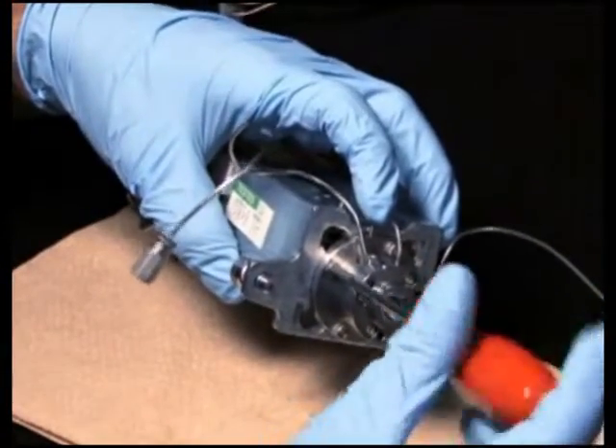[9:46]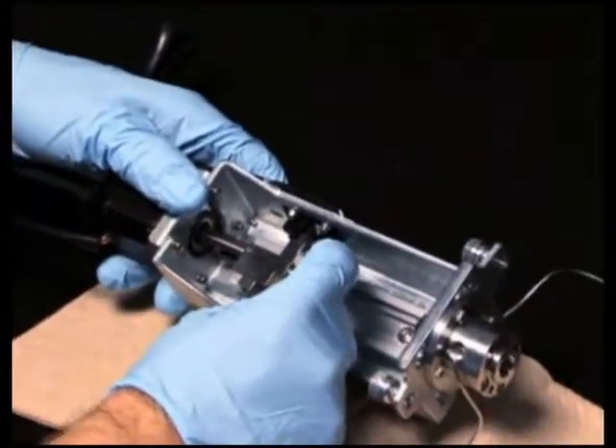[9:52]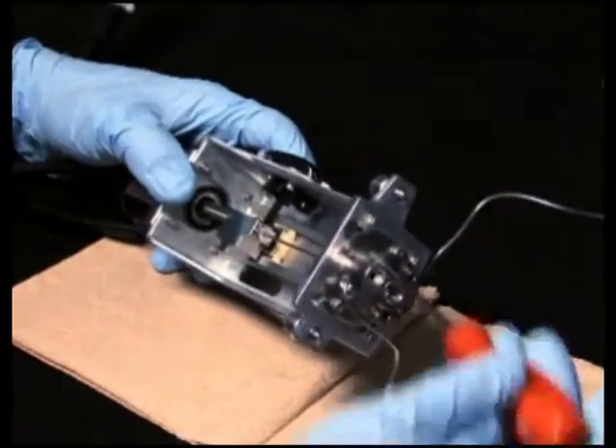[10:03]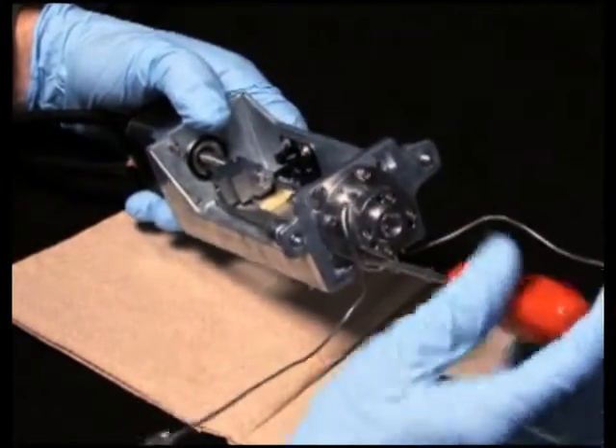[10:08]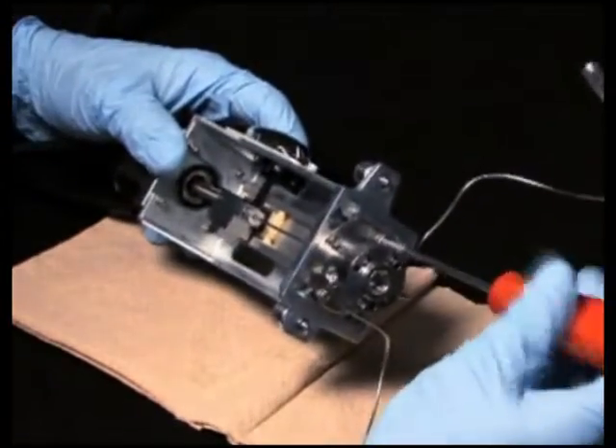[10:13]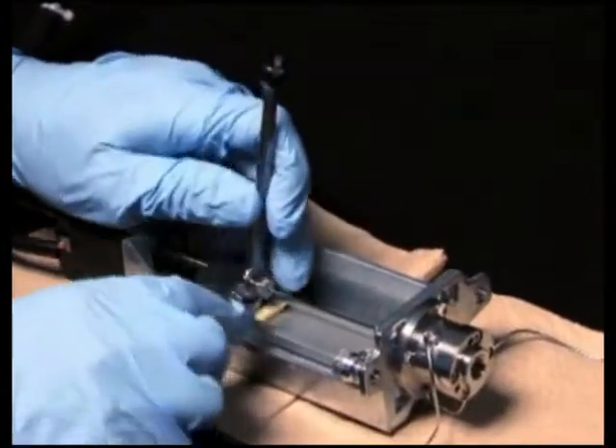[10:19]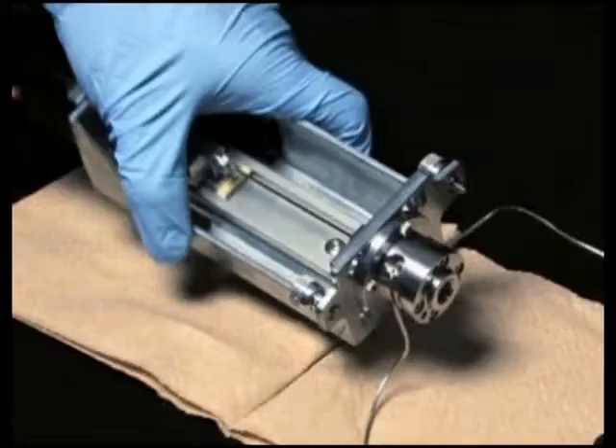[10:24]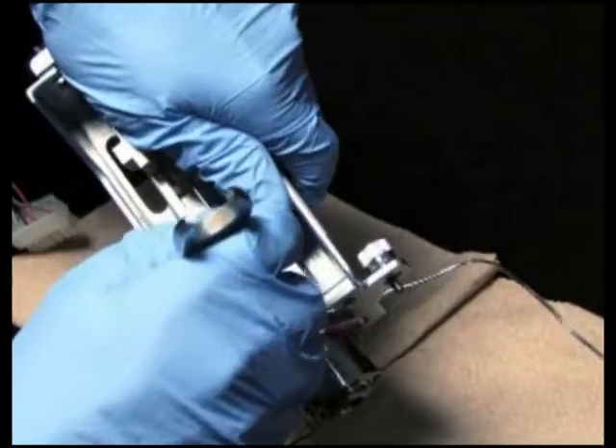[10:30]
Continue to guide the needle and ferrule into the needle T until it seats. Then, hand tighten the compression screw. Now, tighten the four T10 Torx screws that secure the seal pack to the injector base. Use the 5/16 inch open-end wrench to tighten the needle compression screw. Finally, reinstall and tighten the upper and lower needle wash frit retainers.
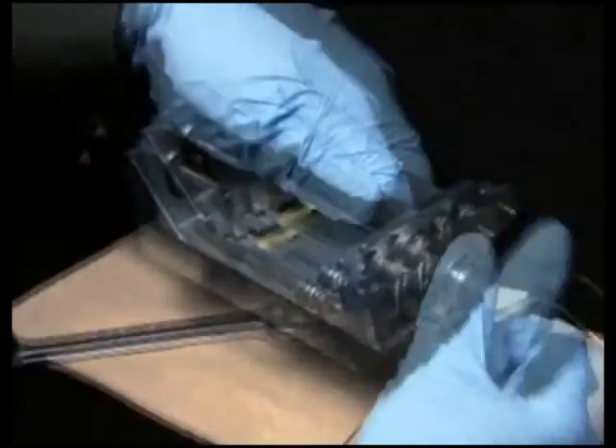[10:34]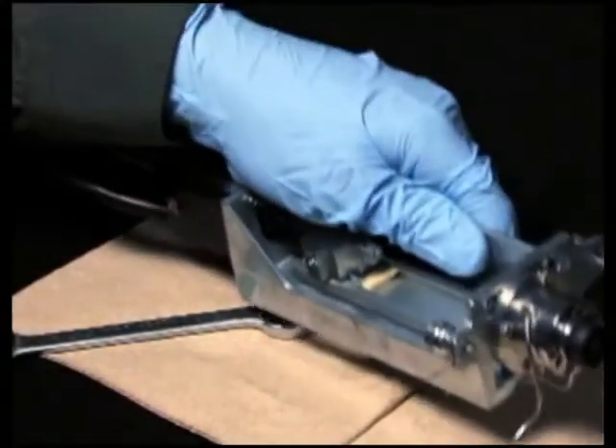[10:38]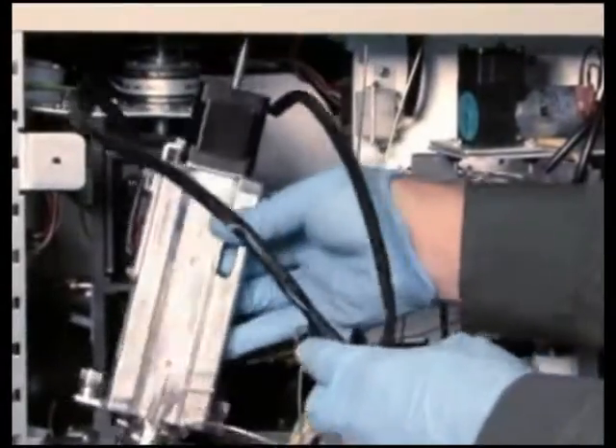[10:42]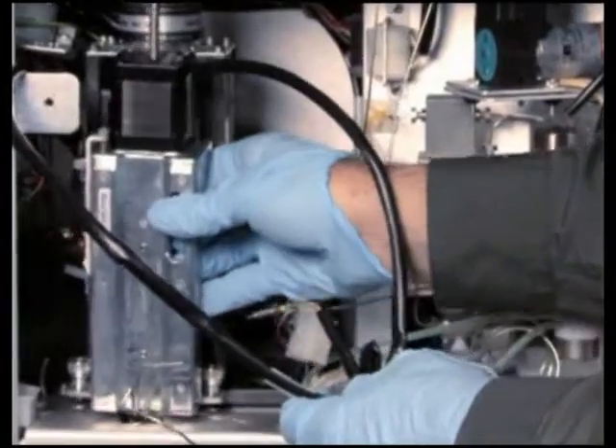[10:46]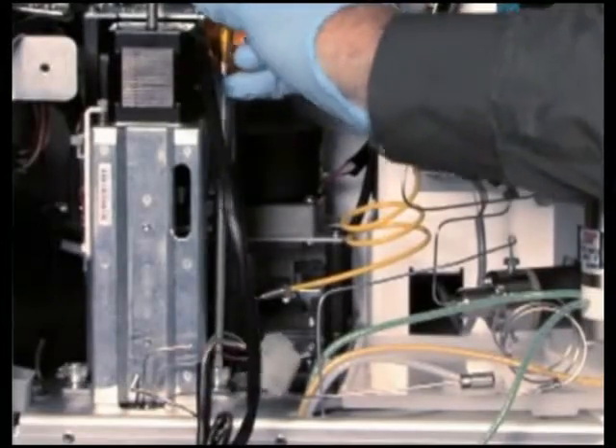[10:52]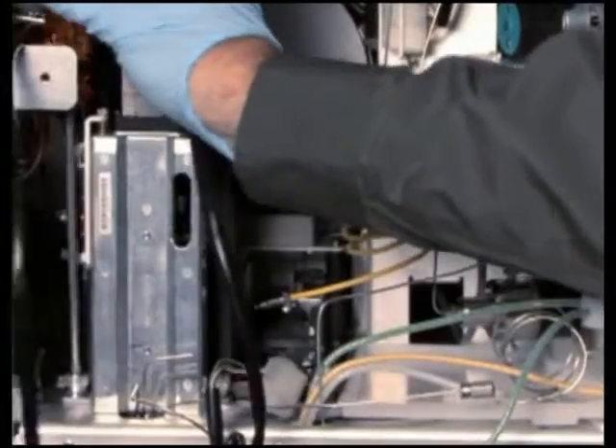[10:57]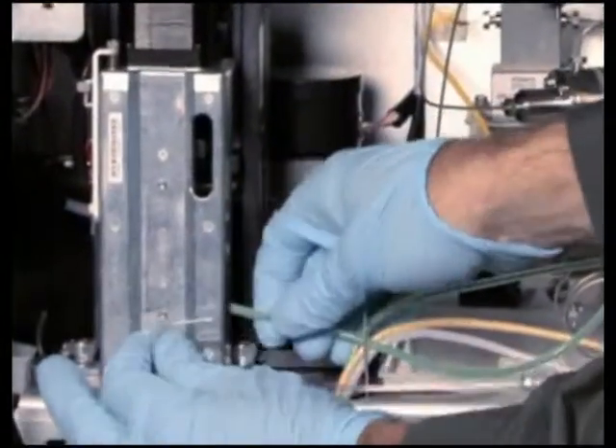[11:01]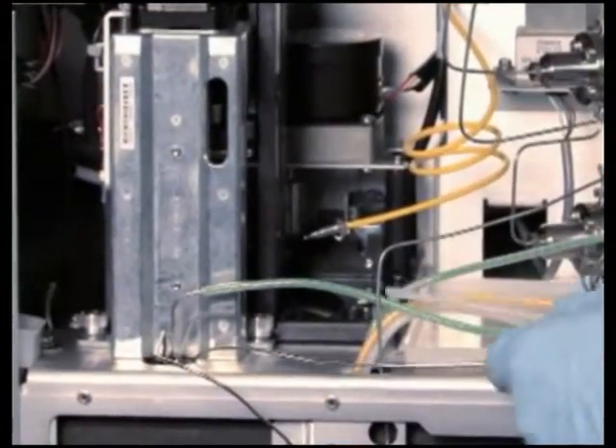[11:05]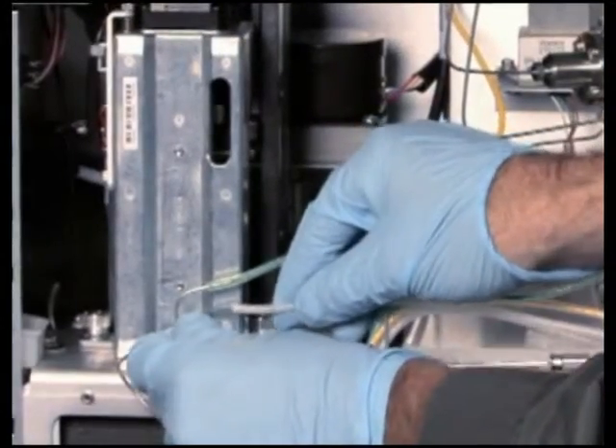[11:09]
Next, install the injector assembly by lowering it so that its tubing is not pinched between the injector base and the compartment floor. Then secure it with the two captive screws. Reconnect the green needle wash inlet line and the yellow or clear needle wash outlet line to the stainless steel connecting lines at the bottom of the injector.
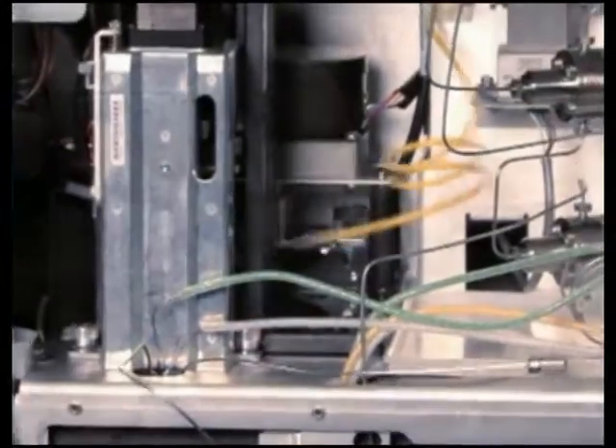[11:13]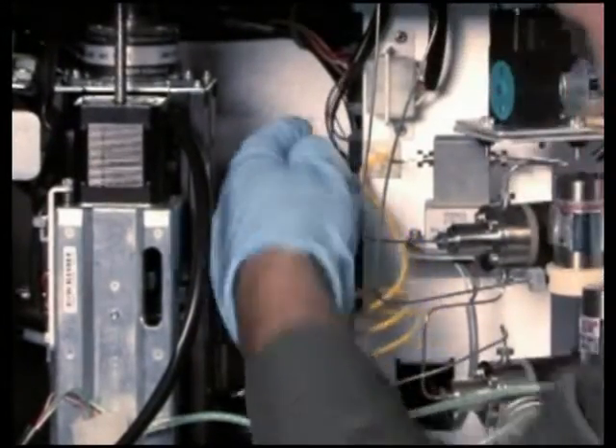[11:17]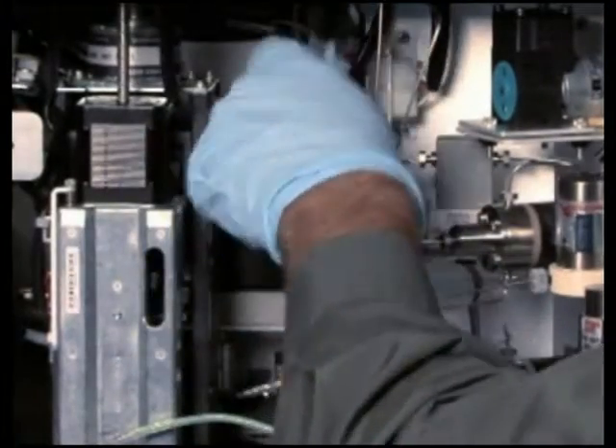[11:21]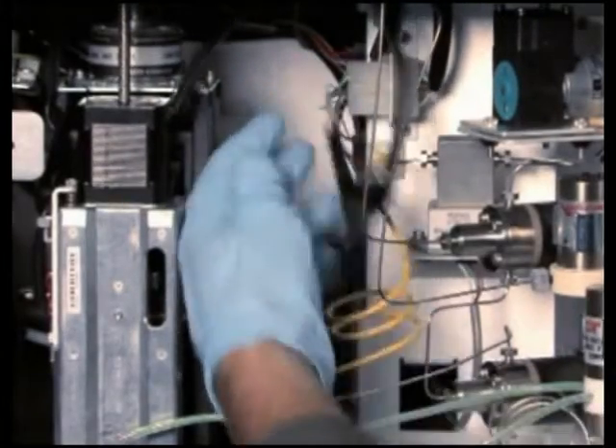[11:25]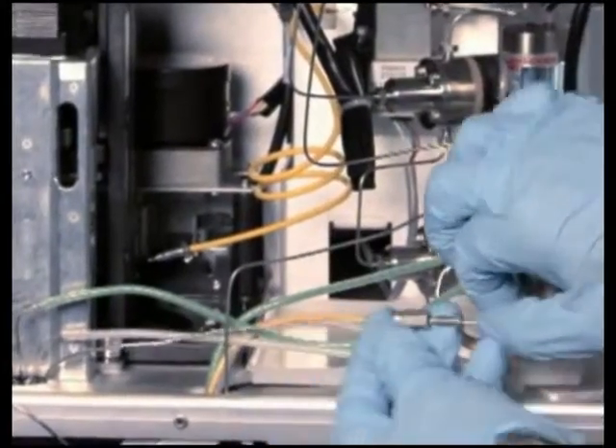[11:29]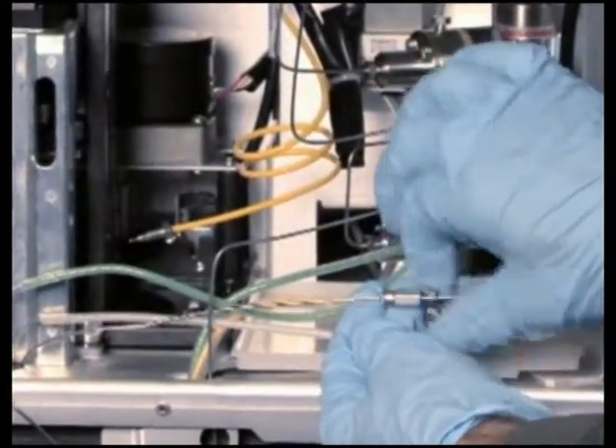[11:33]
Reconnect the optical switch cable to the driver circuit board, the injector motor cable to the interconnect on the chassis-mounted bracket, and the restrictor loop to the fitting attached to the shorter of the two stainless steel tubes exiting the injector bottom.
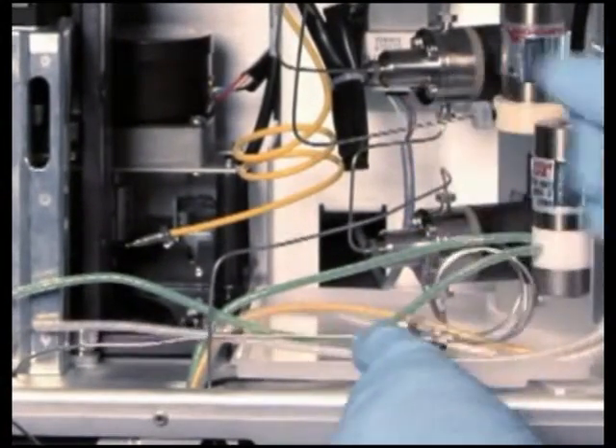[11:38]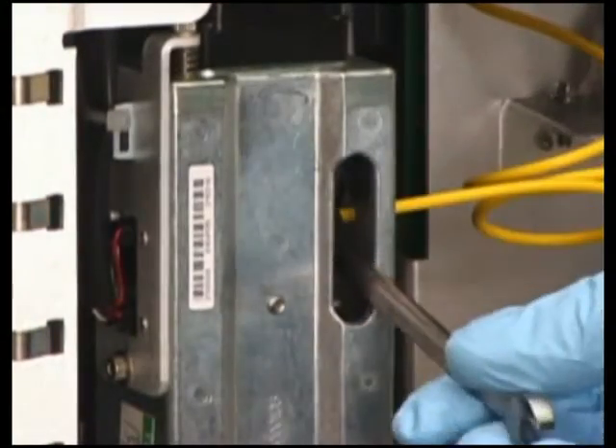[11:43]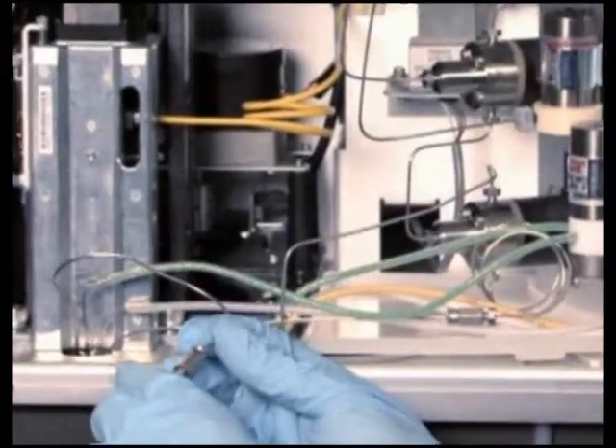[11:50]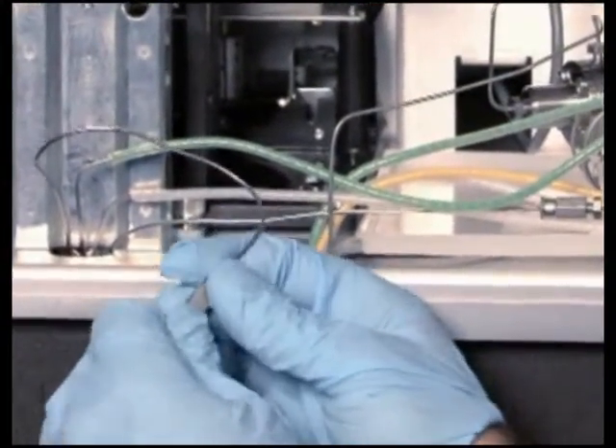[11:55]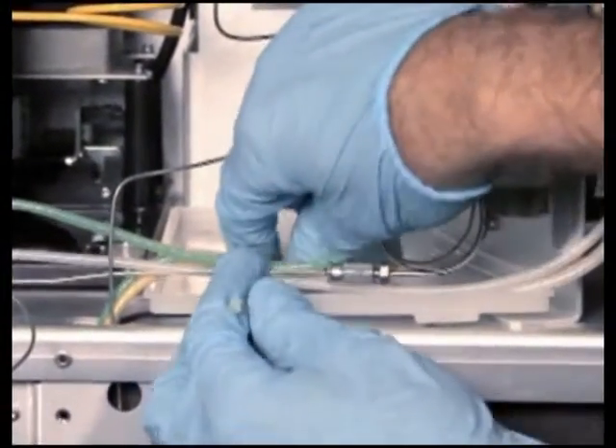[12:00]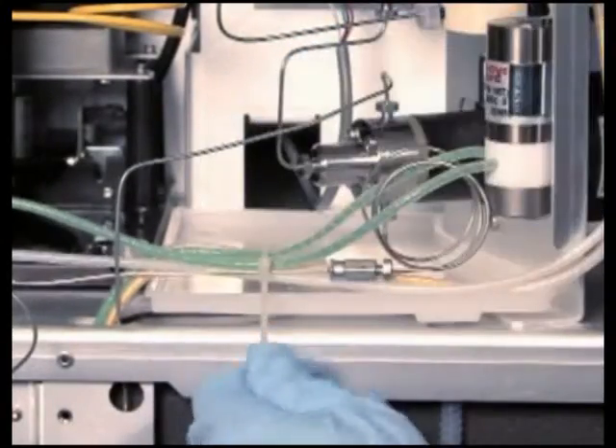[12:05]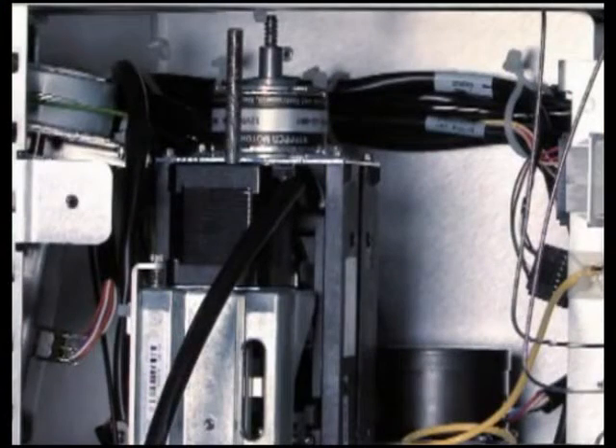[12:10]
Reconnect the sample loop to the needle T and tighten into place using two 5/16 inch open-end wrenches. Reconnect the column fluidic line between the injector assembly and the column. Use tie wraps to secure the needle wash lines and the restrictor loop. Carefully route the optical switch cable to the back of the chassis and secure it with the tie wraps.
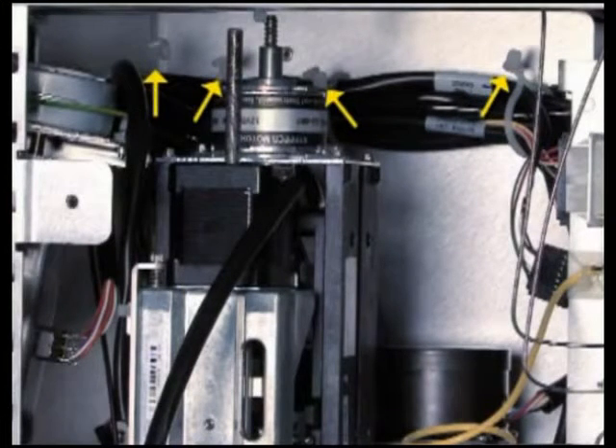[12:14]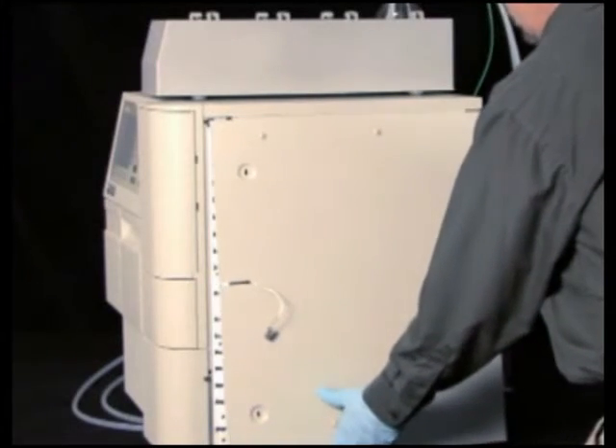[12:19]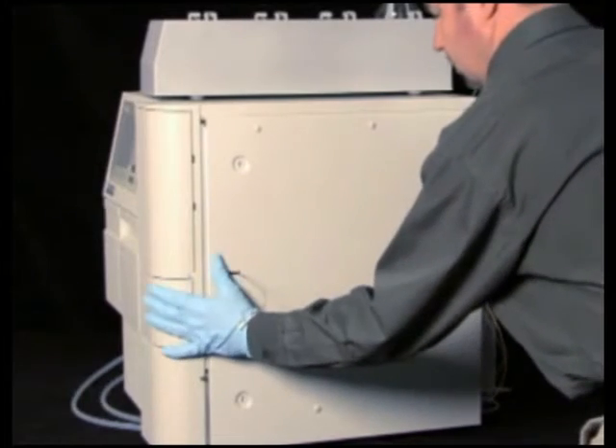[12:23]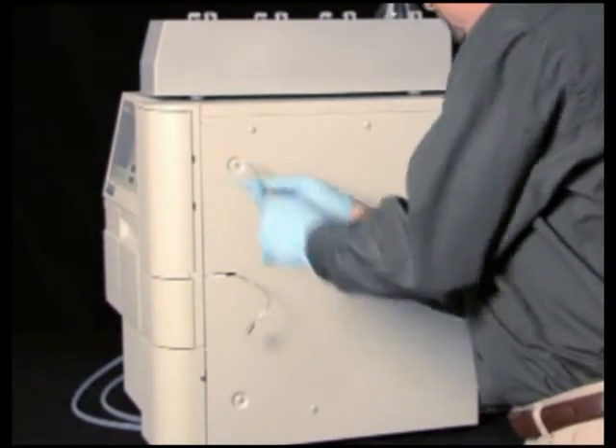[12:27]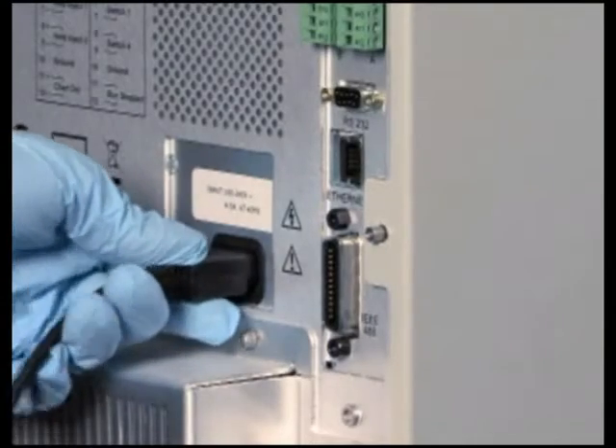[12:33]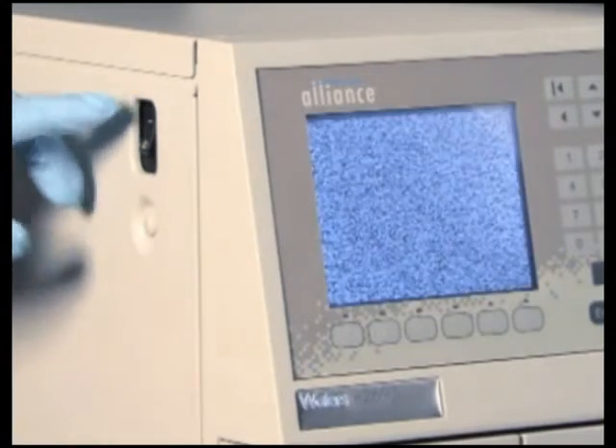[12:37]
Next, refit the separation module's right side panel and then secure it with the screws. If you removed a column heater or column heater cooler, reconnect the column heater cable and reattach the column heater onto the keyed ports. Finally, reconnect the power cord and then power on the separations module. After reinstalling the injector, you'll need to adjust the seal pack.
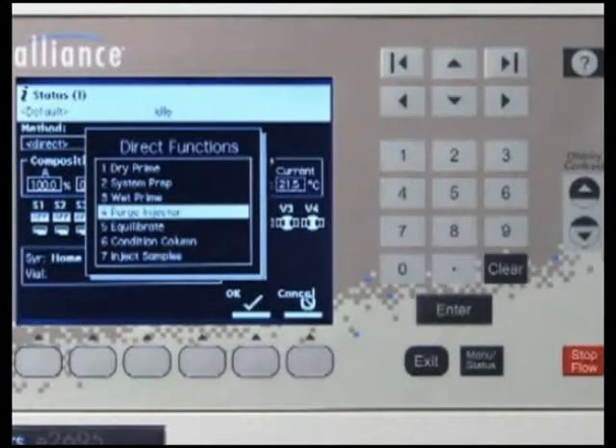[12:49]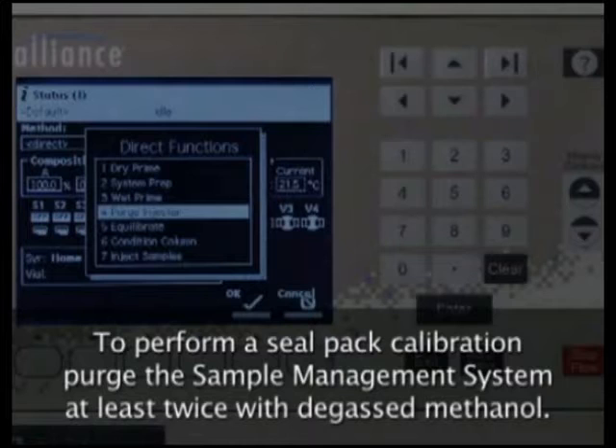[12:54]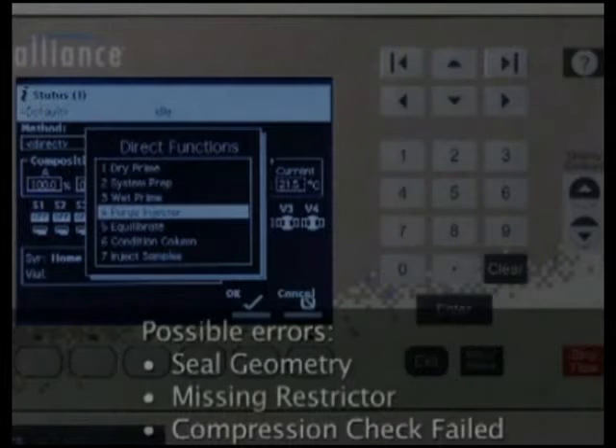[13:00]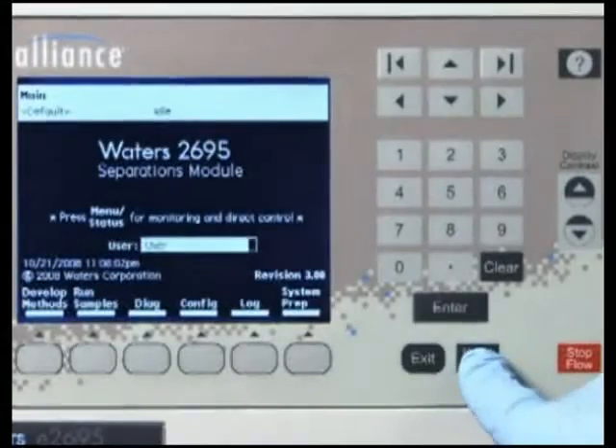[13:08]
To adjust the seal pack, you must first purge the sample management system at least twice using degassed 100% methanol to ensure that there is no air in the syringe. Failure to do so may cause seal geometry, missing restrictor, or compression check failed errors to appear. To perform the purge, press the menu status key to display the status screen. Then verify that Direct appears in the method field.
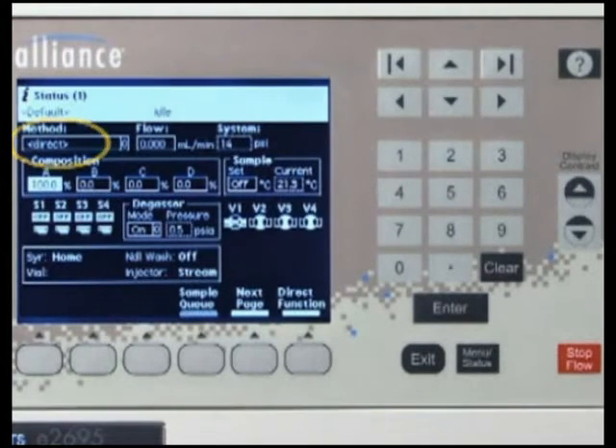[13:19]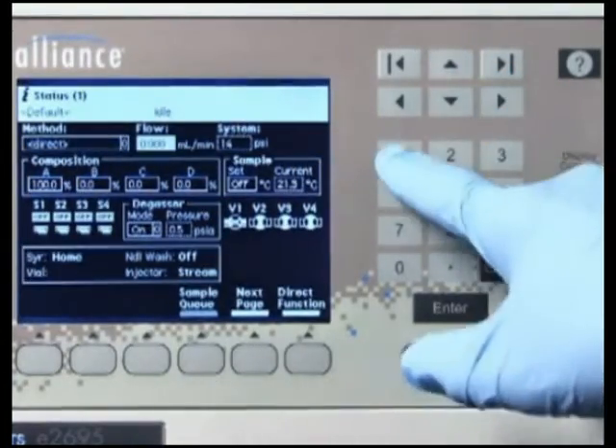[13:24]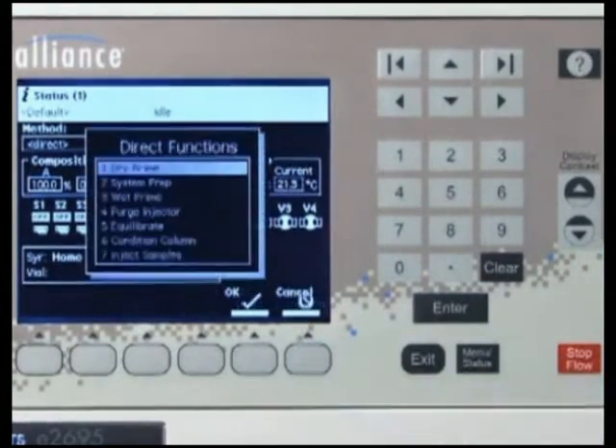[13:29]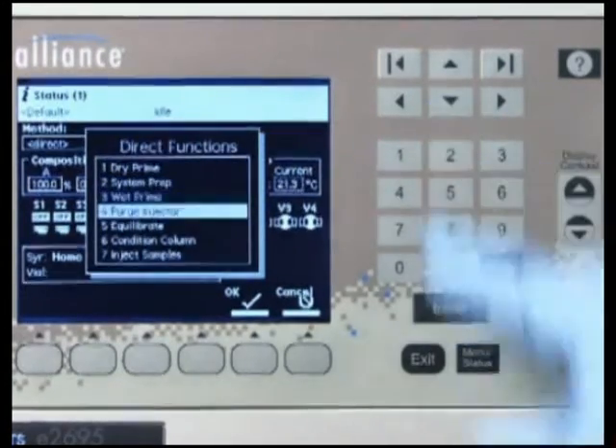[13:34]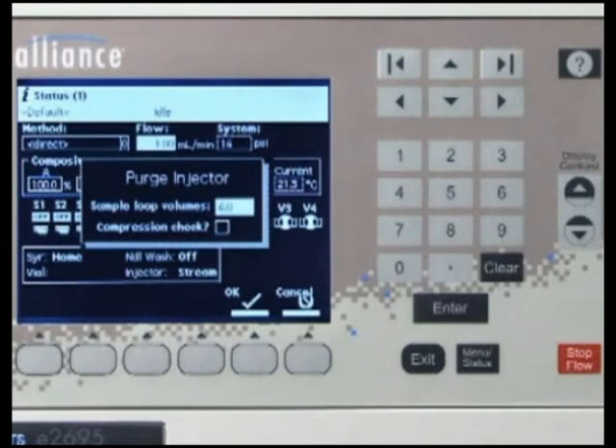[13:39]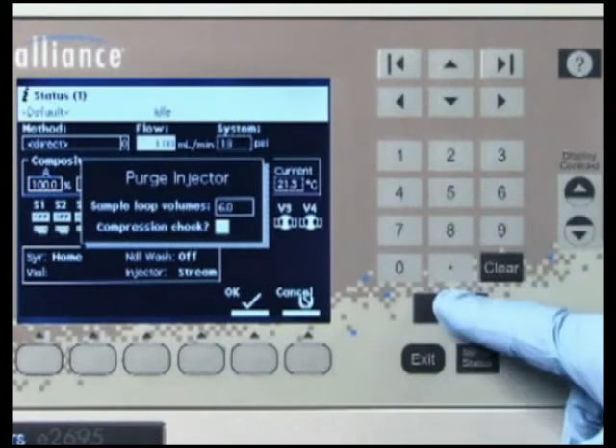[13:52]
Set the pump to deliver 1 milliliter per minute of 100% degassed mobile phase. Next, press the Direct Function screen key. Select Purge Injector, then press Enter. In the Number of Sample Loop Volumes field, enter 6, then press Enter. To check for air bubbles in the syringe, select the Compression Test checkbox to perform a compression test. Finally, press OK to start the purge cycle.
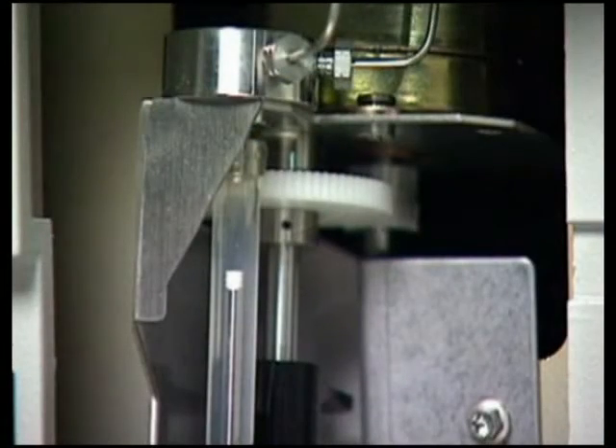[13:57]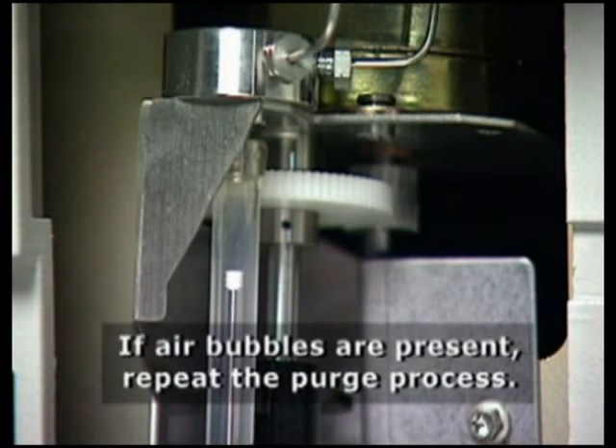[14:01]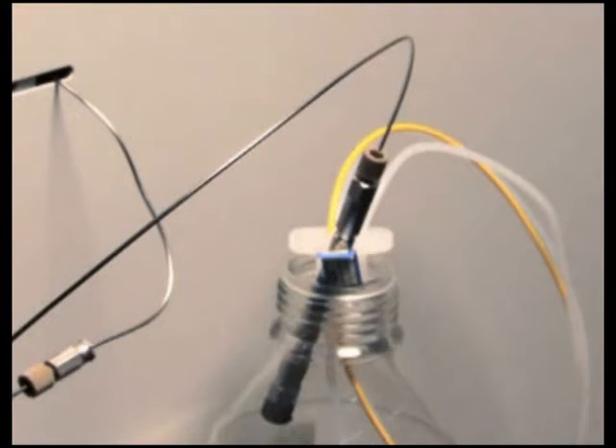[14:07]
When the cycle is complete, look to see that there are no air bubbles in the syringe. If air bubbles are present, repeat the purge process. Next, remove the column and create restriction by partially capping the line with a union and fitting plug. The restriction should generate at least 1,000 psi back pressure at a flow rate of less than 3 milliliters per minute. A suitable container will be necessary to collect solvent runoff.
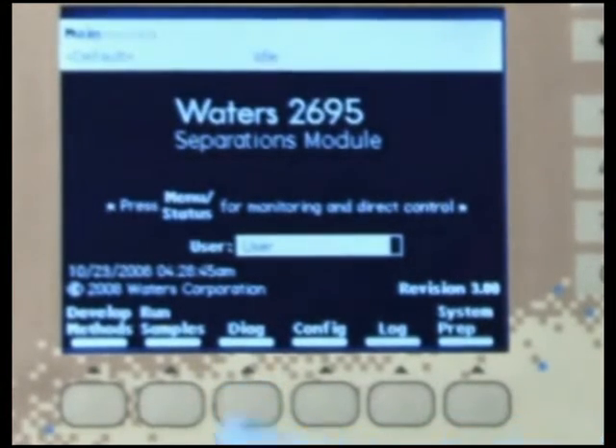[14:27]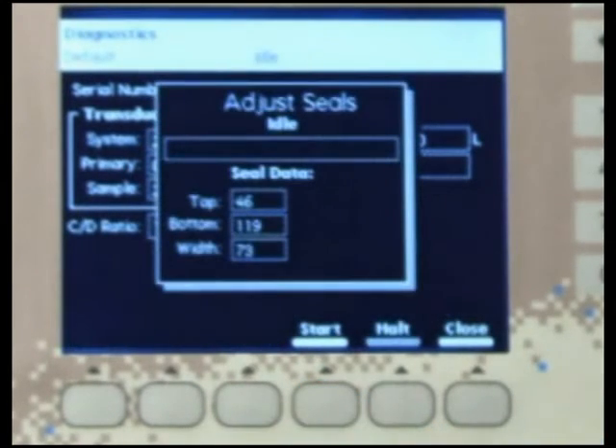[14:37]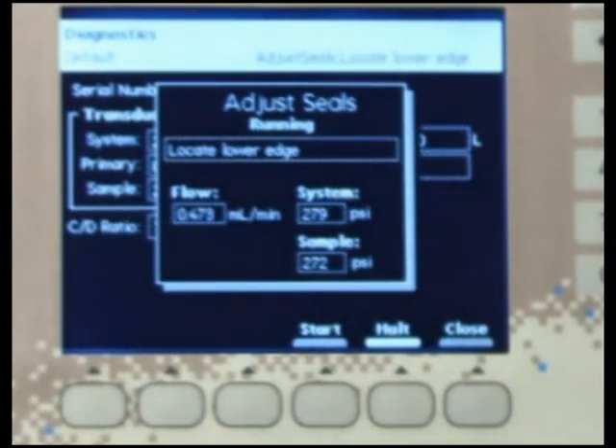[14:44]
To adjust the seals, access the diagnostic screen from the 2695 main screen. In the diagnostic screen, press the Adjust Seal screen key. Press the Start screen key to begin the test. When the test is complete, the screen will display Pass or Fail and the new and previous results.
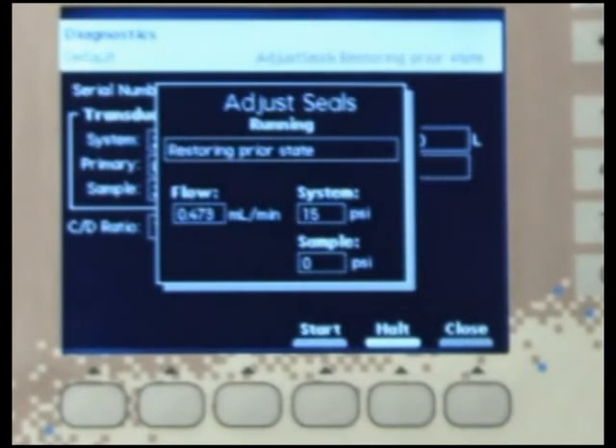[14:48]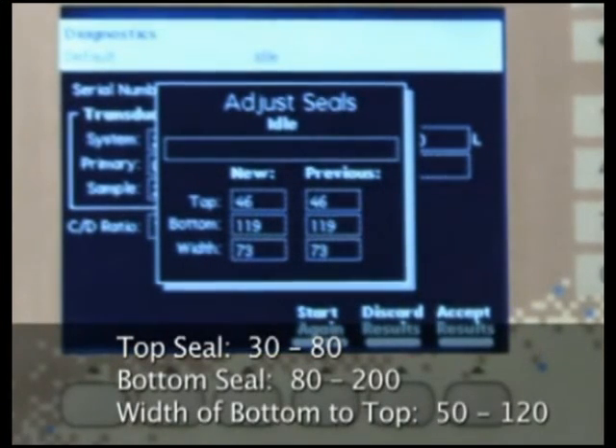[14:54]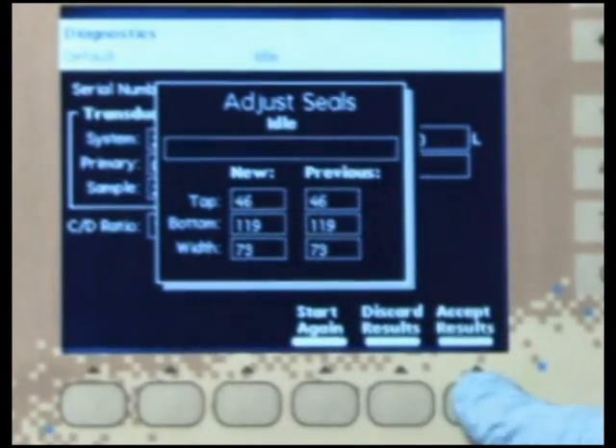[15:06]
The new Adjust Seals parameters should be within the following acceptable range: Top Seal, 30 to 80. Bottom Seal, 80 to 200. Width of bottom to top, 50 to 120. If the new seal parameters are within the acceptable range, press the Accept Results key to save the configuration.